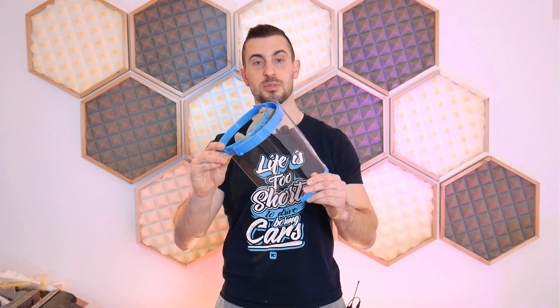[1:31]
Hey guys, so with all the recent world events surrounding the COVID-19 or coronavirus, there's been an incredible amount of support online from the maker community. They've been supplying the medical field with things like 3D printed ventilators as well as these 3D printed face shields.
Now this one here is derived from a very popular design that I believe originated with Josef Prusa. And I downloaded and printed that original one. I tried it on and I noticed that there were some areas that I thought I could improve, namely the biggest one being the requirement for an elastic band around the back.
That elastic band can be hard to source, and a lot of people don't commonly have something like that just sitting around at home. And with all the stores closed, it's also very difficult to get your hands on other stuff. And so what I wanted to do was work in a design in the back here that could allow you to still provide tension around your head while you wear this mask, and it's all printed in one piece. So I'm gonna show you guys that in this video.
As well, I wanna just offer you guys a little bit of advice in terms of ideas for things like the foam piece on the front, as well as alternatives to that elastic band in the back that you can also use with my design here.
Now, as a foreword to the rest of this video, you'll notice that I'm handling this thing without gloves. I am aware that I can have potentially contaminated this particular mask, and the good thing is that I understand that, and this mask is not meant for distribution. This one here is for prototyping and demonstration purposes only, so you guys don't need to remind me of that in the comment section. I will not be distributing this mask.
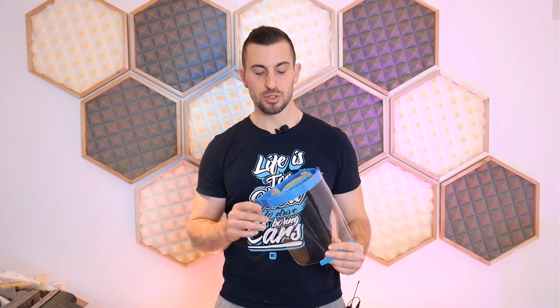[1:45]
If you guys do plan on distributing masks and making your own, please be mindful of the rules around sanitation and not contaminating the people that you plan on giving these things to. And so there's some procedures I'm sure that you can find online in terms of producing and handling these things. Please do not infect other people by handing these things to them after you've touched them with your bare hands or you breathe all over them.
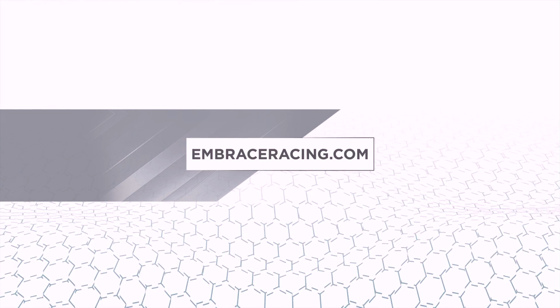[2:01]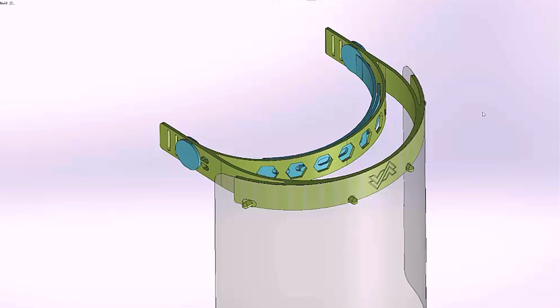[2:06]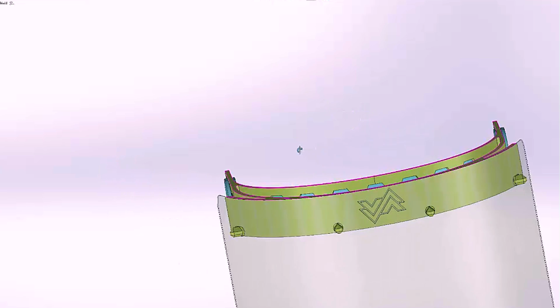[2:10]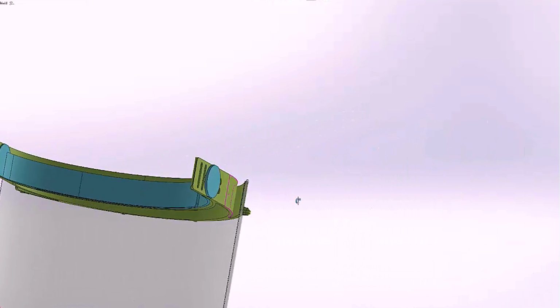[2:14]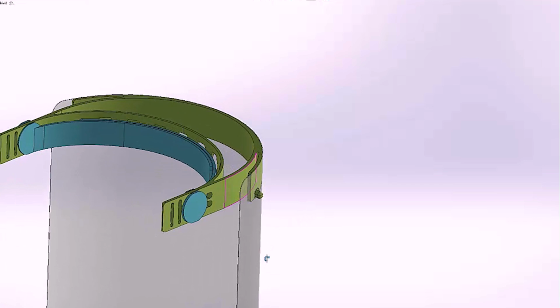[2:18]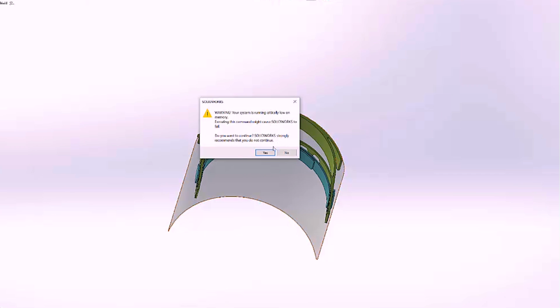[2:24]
So we'll start off by taking a quick look at the CAD model just to give you a general idea of what this thing looks like. And so I've modeled this in SolidWorks, and as we rotate towards the back, you can see the additional blue straps that I've modeled in. And these things here are modeled in the position and orientation that you would print this entire thing.
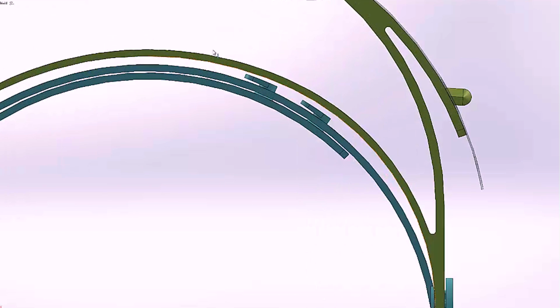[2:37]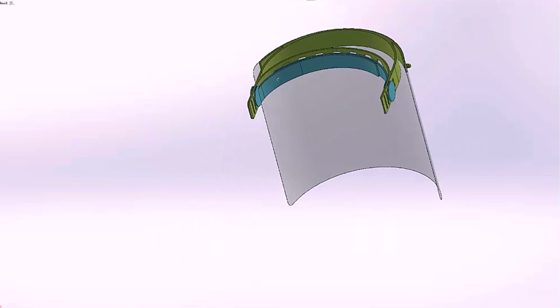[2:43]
Looking at a top view, this is what it would look like as you print it from the top on a 3D printer bed. And again, you can see the sort of tighter tolerances between those pieces. And this is a single piece print-in-place model, so you don't have to do any sort of additional post assembly.
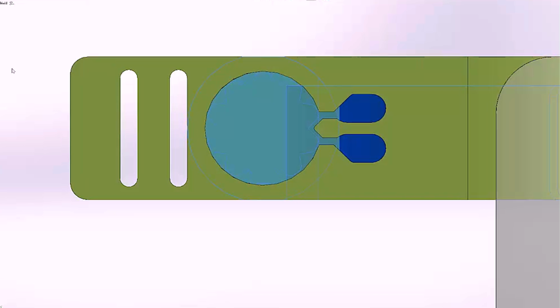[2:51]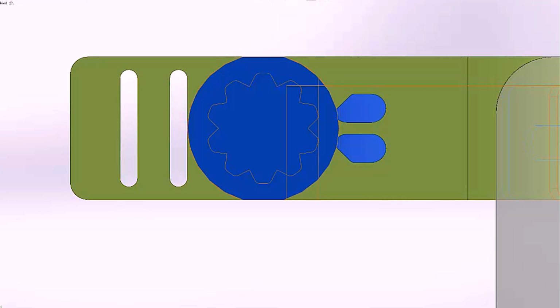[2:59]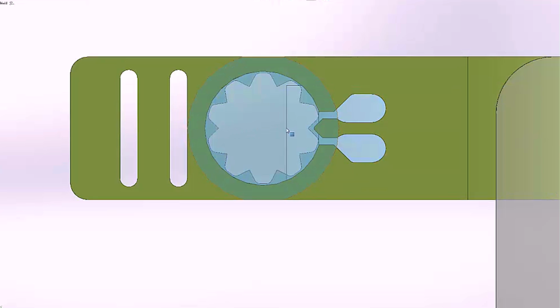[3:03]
So now looking at a side view, you can see here that I removed those headband straps, and there's a little arrow shaped detent feature in there. And as I bring the straps back and I make them transparent, you'll be able to see an outline of a sort of gear shaped looking mechanism, and that little arrow detents into those features there.
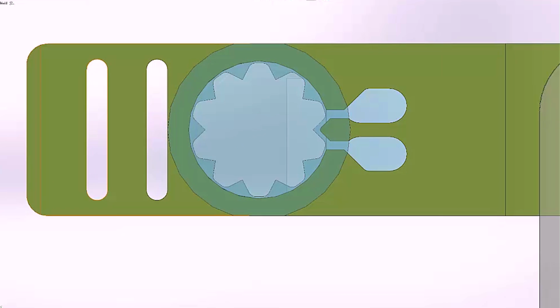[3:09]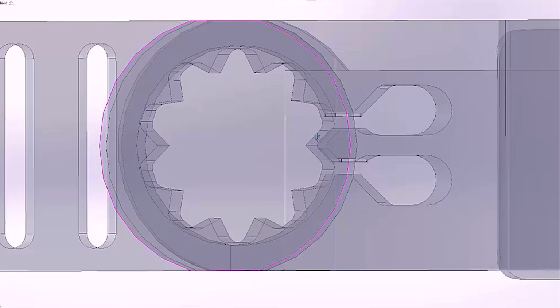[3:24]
And so as you move the straps up and down, whether it's above or behind your head, there's a bunch of discrete positions that they fall into, and it keeps them secured in place. And then that little arrow shaped piece has some material above and below it to keep the thin feature there from snapping off as you continue to cycle through each position.
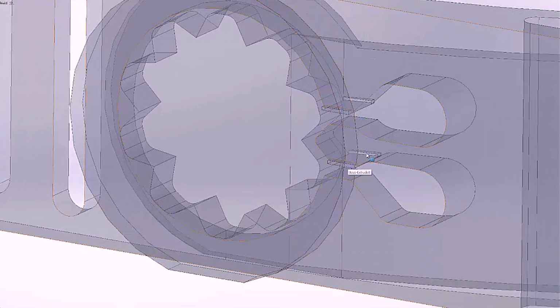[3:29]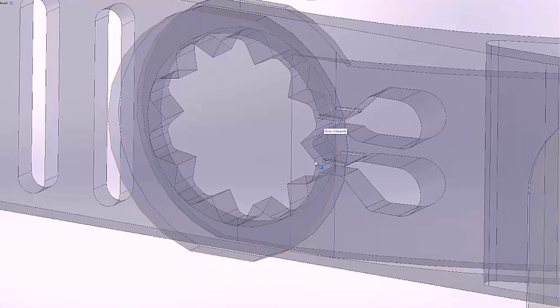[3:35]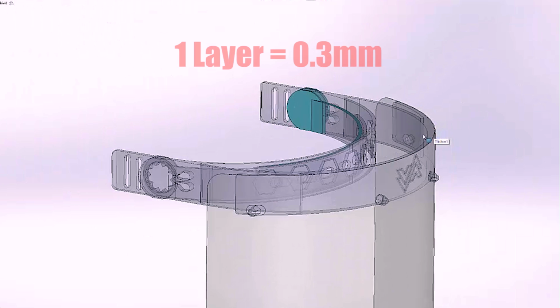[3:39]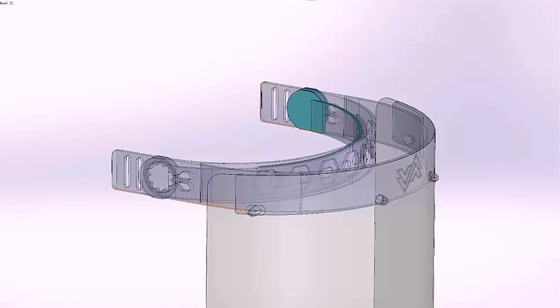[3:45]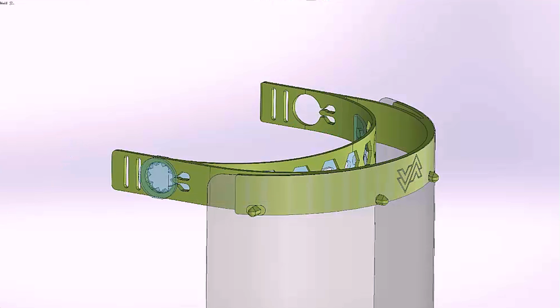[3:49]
Now, as I bring in these other small features, I've employed some small 3D printing tricks here. And what I've done is I've created little bridges on the overhang parts that are only one layer thick. And so when I bring them back into the model, because now I've connected all of the pieces, it's essentially one giant piece instead of three individual pieces. And so you see the colors change there in SolidWorks.
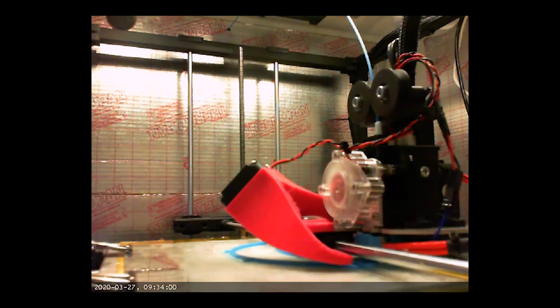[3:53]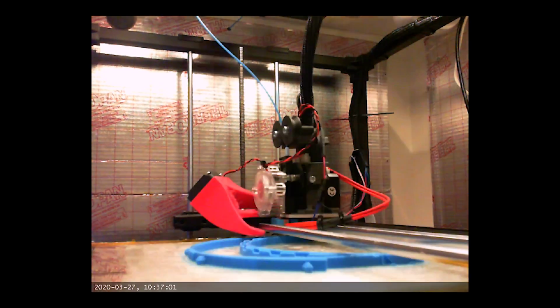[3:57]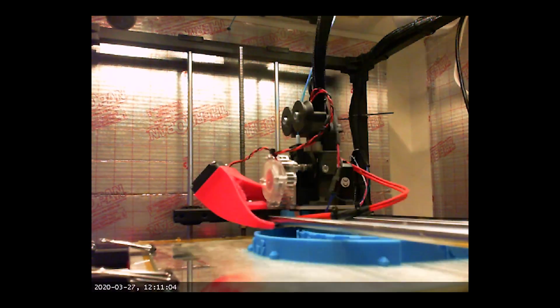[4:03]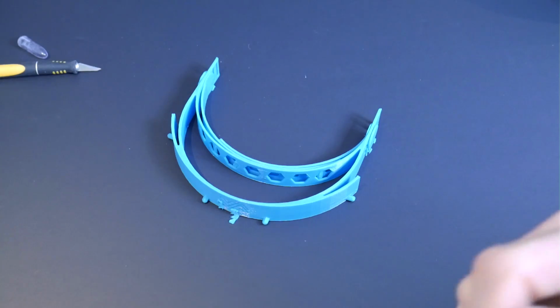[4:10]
But essentially those little single layer bridges allow you to print those complete overhangs without any sort of support. So you won't need any support inside of that model there, and that'll make a nice clean print. And then afterwards you can just break those single layers free very easily by hand. Post-printing, there is very little cleanup to be done.
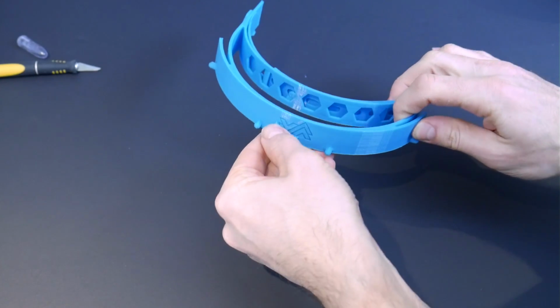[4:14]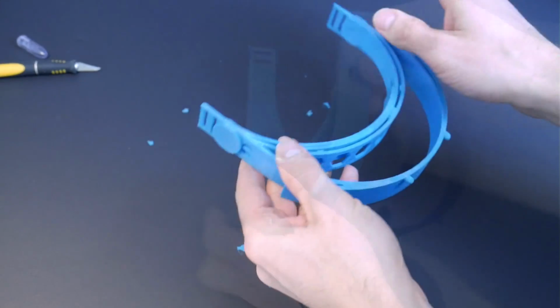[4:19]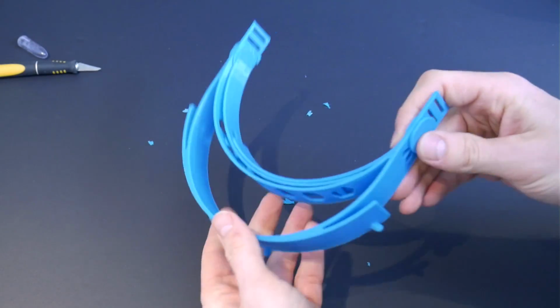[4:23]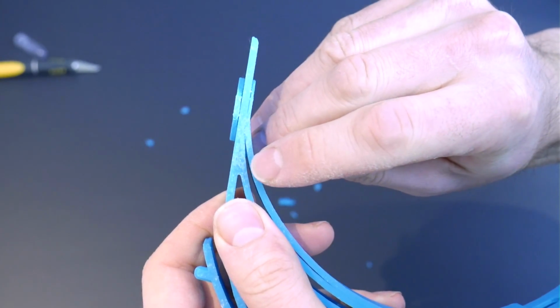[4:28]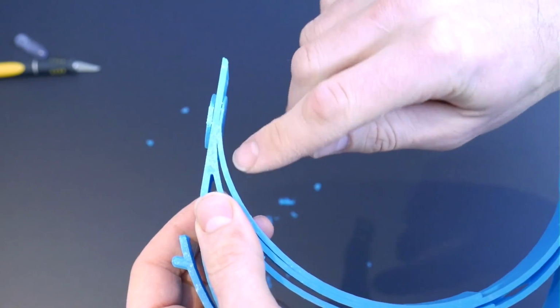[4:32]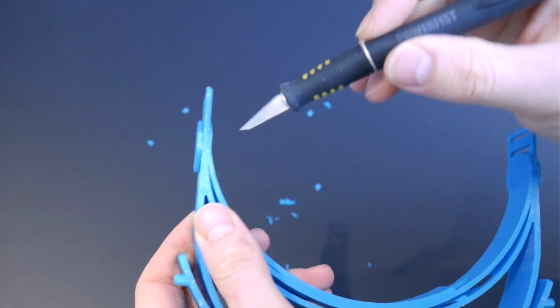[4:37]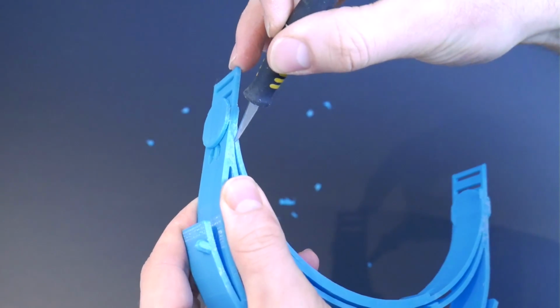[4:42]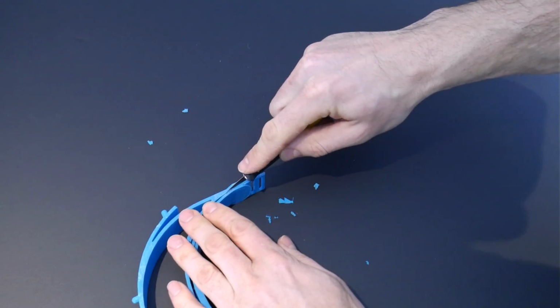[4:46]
You can actually pick off most of the support, if not all of it, by hand, as you see I'm doing here. Now, depending on your printer tolerances, my printer isn't the greatest, and on the bottom layer, it has a tendency to sort of really squish everything together and over-extrude just a little bit. And so it melded those bottom layers of the separate parts together. So my headband is actually still a little bit attached to the main bracket, if you want to call it that. I'm gonna take a little razor blade here and I'm just gonna separate them, as it's only the bottom layer that's really an issue. This is pretty easily done.
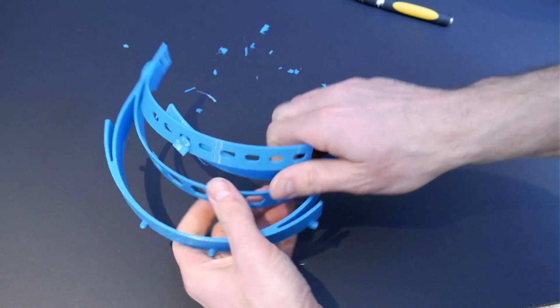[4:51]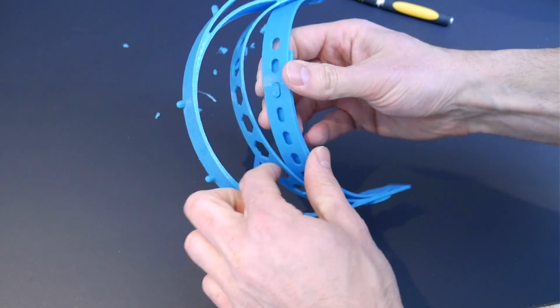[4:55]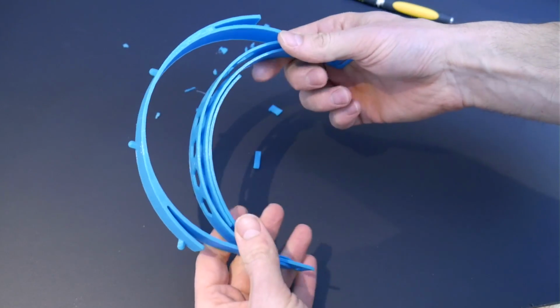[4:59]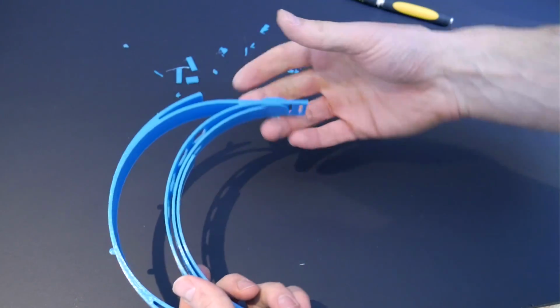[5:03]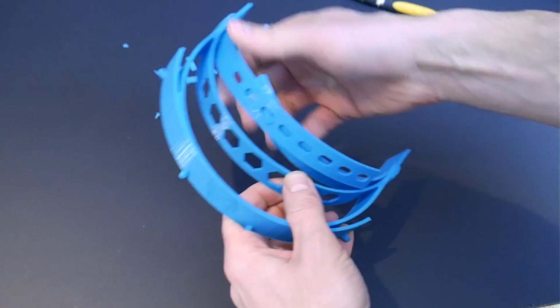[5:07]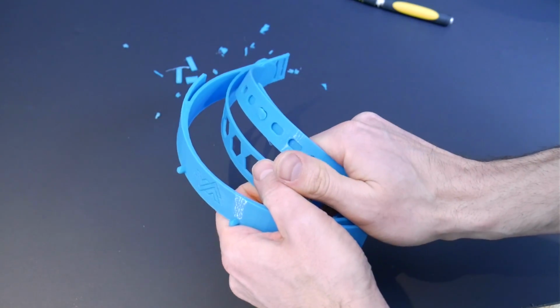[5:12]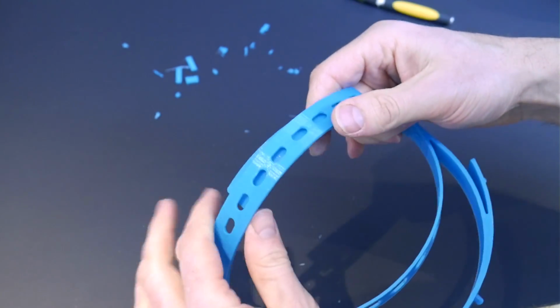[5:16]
So once I've run my blade through, you can pretty much just pull up on those headband pieces and start working them back and forth. You're going to have to just rotate them once or twice in order to break those little bridge pieces that I showed you in the CAD model earlier. And once those things break free, you'll notice that it's much easier to rotate those headband pieces. And you'll also notice, like I said, there's a detent feature in there holding them in place into each position.
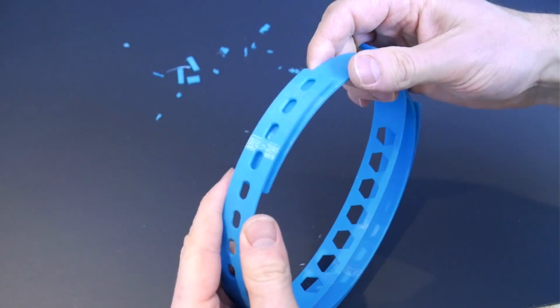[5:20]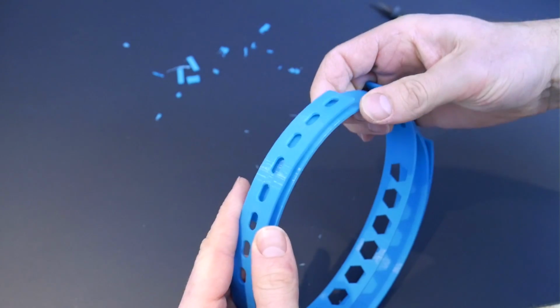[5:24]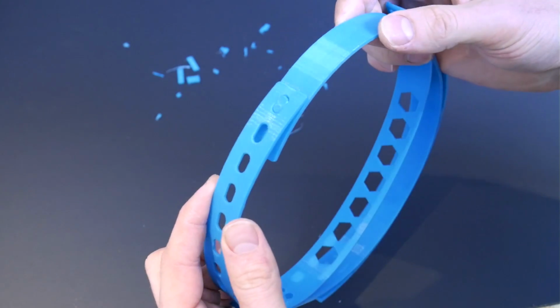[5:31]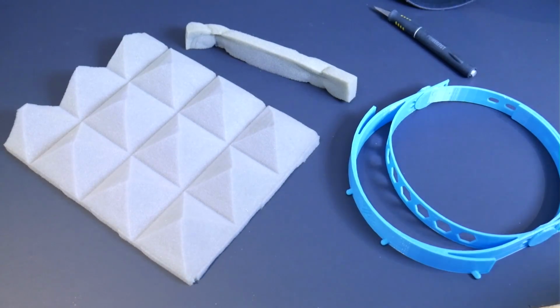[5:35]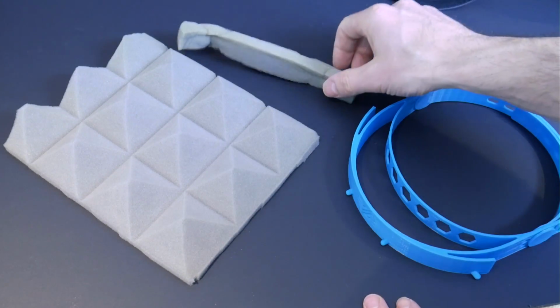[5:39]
With the bands free, you can now insert and secure the headband clasp. And if you notice here, there's actually only one clasp in this earlier prototype, but in the final CAD model, which I've released, there's two clasps for a more secure connection. The foam forehead piece is definitely a requirement, as the bare 3D printed plastic feels like daggers on your forehead.
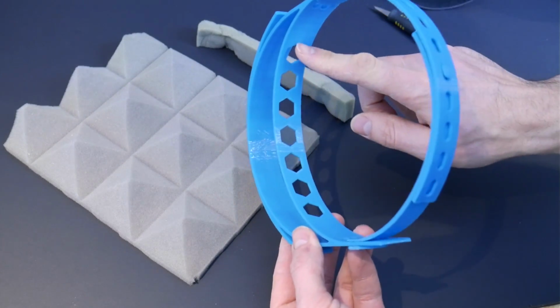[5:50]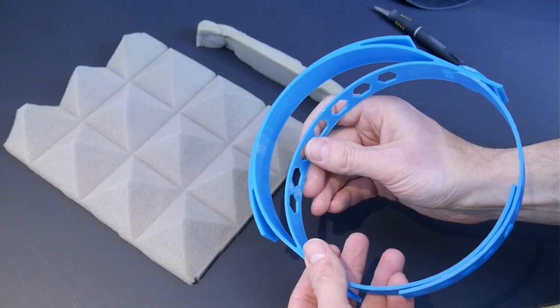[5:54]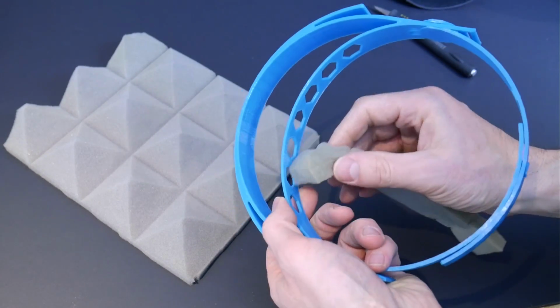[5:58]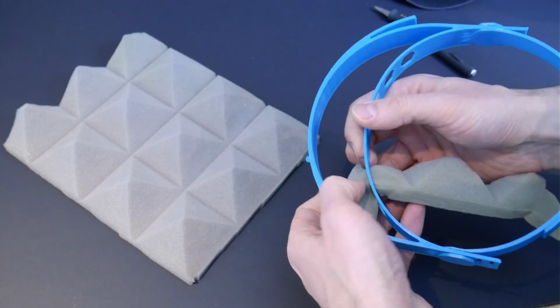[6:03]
And so I'm just cutting up some acoustic panel here that I had from another project. And it turns out that the hexagonal shapes inside on the original Prusa design can be used to weave that foam through, and you don't need to use anything like elastic bands or even an adhesive backing to attach that, because most of us don't have adhesive backing laying around, and most of us probably don't even have this sound deadening material laying around either.
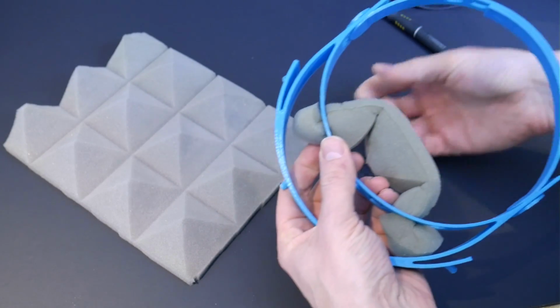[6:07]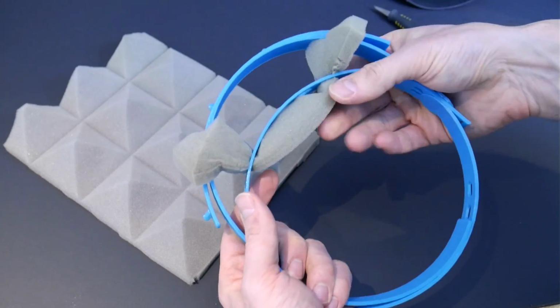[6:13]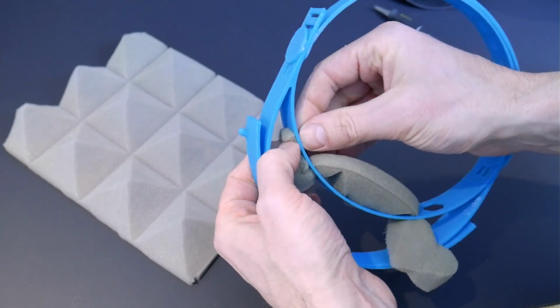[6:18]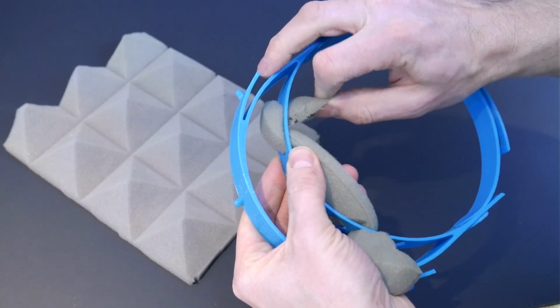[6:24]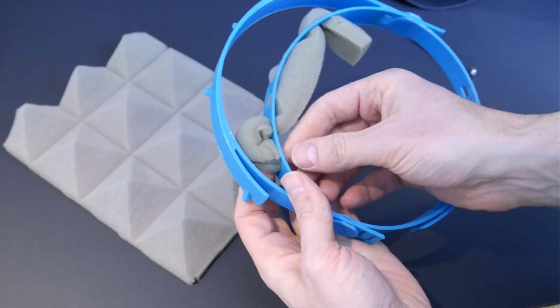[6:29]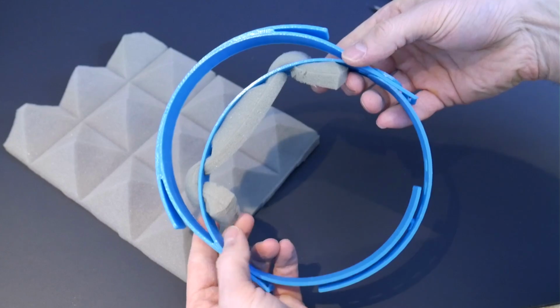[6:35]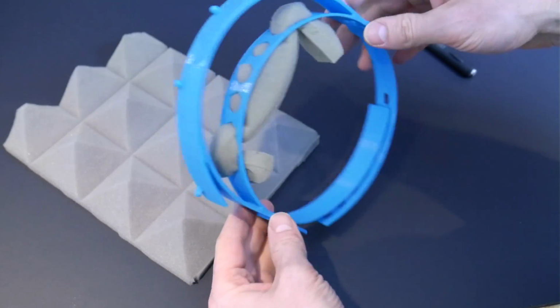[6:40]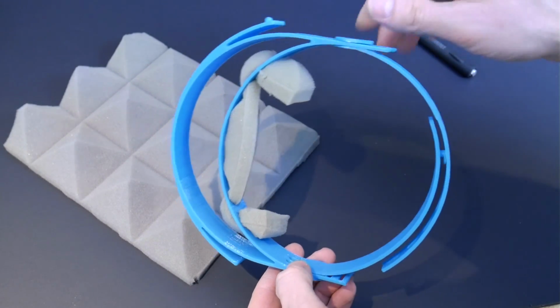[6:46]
And if you guys don't have something like that, I was thinking that you could probably get creative and roll up some paper towels and weave that through, or even cut up some old t-shirts or something of that nature, and again, weave it through like I'm showing you here, and that'll secure it into place. Now, foam or any porous material isn't ideal in a hospital environment, as it can store bacteria, germs, and all sorts of things in those pores. And so by using pieces like this in a resourceful manner, you can easily throw them out after and make it a one-time use feature, where you're not having to clean foam that has an adhesive backing.
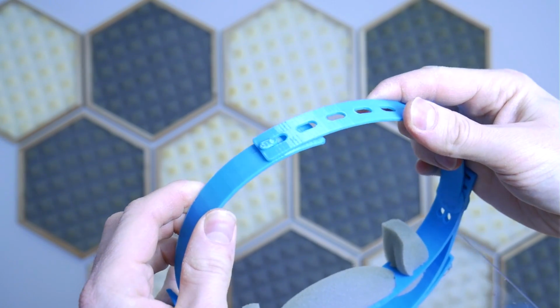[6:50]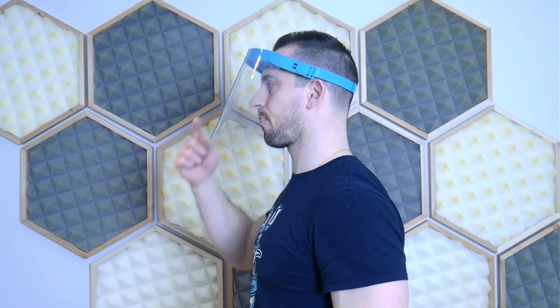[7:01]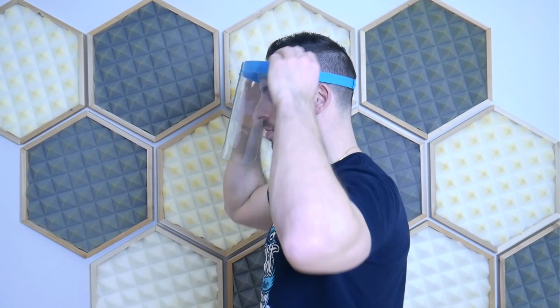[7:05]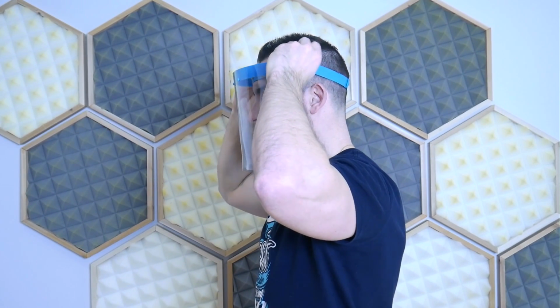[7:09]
We're going to try this thing on, and you can insert the clasp on the new design. Like I said, there's two clasps, and you can essentially just fit it over your head at this point, and you can make any adjustments that are necessary with the clasps. Now, when you turn to the side on the original design, when this thing would go straight over your head with a straight elastic band, there's a large opening at the bottom and the angle is a little weird. By having these detent features, you can actually turn the band down, as I've done here, and get a better angle on that mask, and it's very secure.
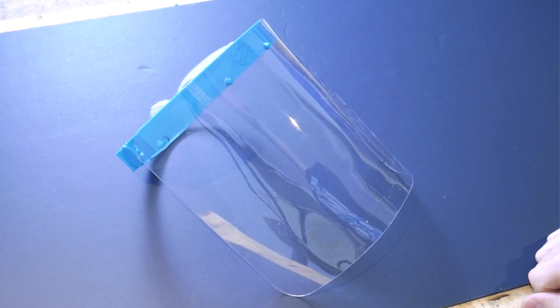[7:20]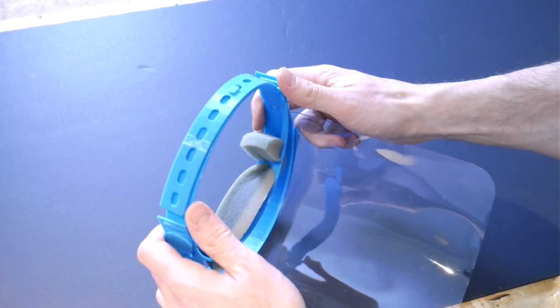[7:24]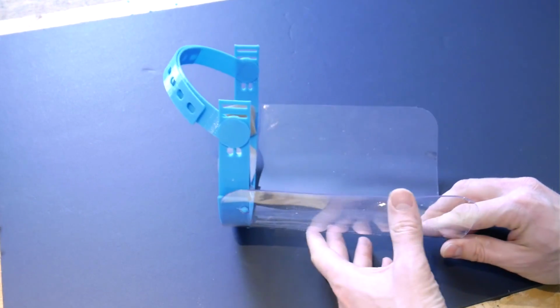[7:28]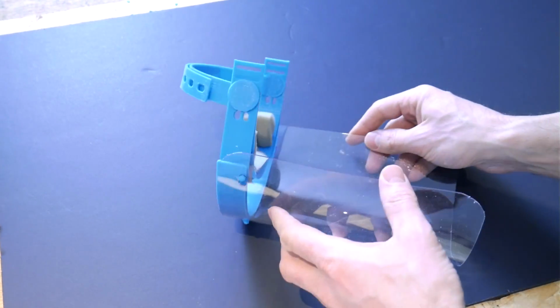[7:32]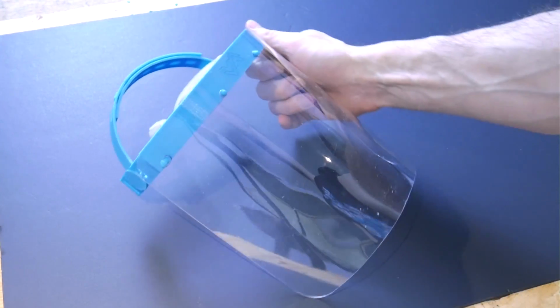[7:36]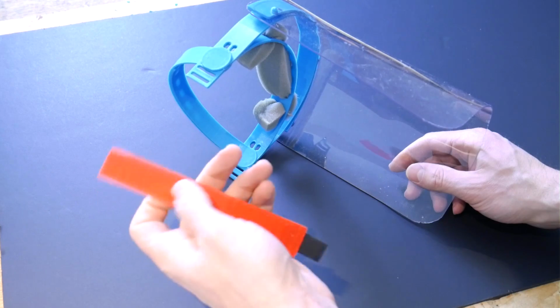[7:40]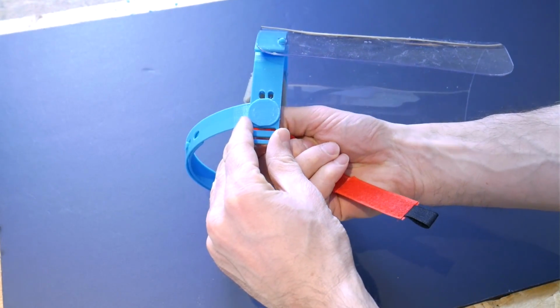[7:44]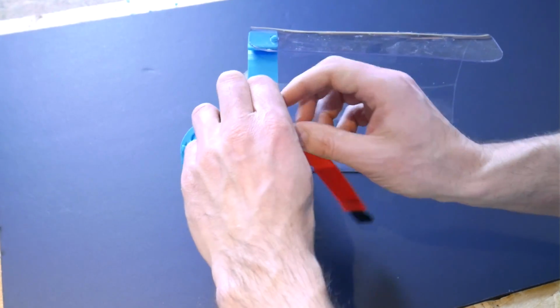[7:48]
Optionally, you can take your bands and you can rotate them upwards into an above the head position, as you can see that I'm doing here. If you're finding that the mask is falling forward over on top of your face too much, that'll prevent it from falling down. Now, you don't have that behind the head support anymore, so there's two slotted features that are included in this model. And you can go back to something more traditional like the elastic features, or get creative and you can go to the dollar store and pick up some Velcro straps.
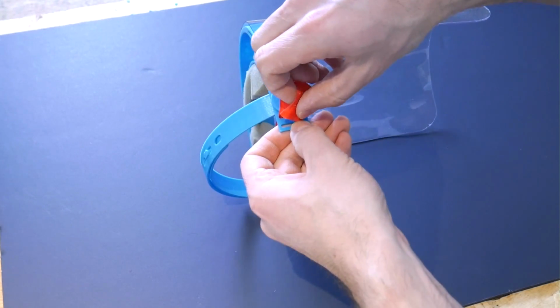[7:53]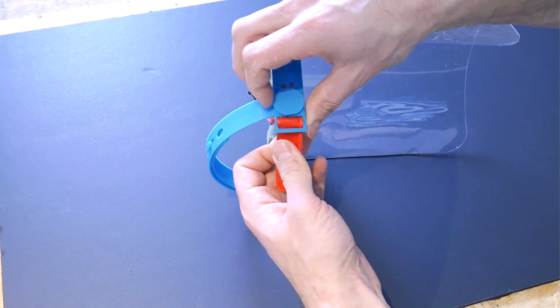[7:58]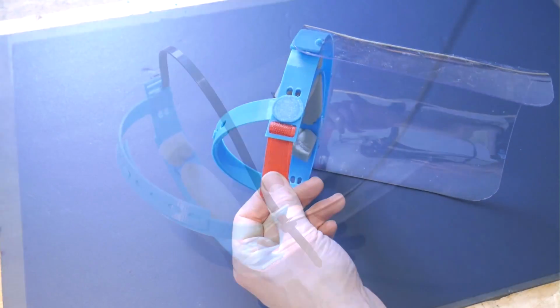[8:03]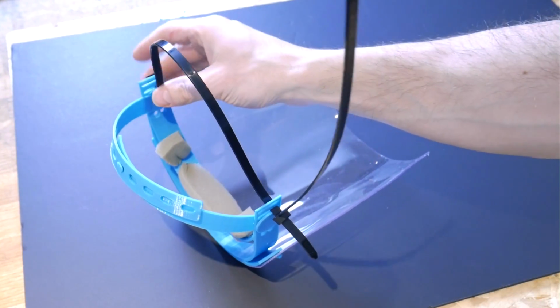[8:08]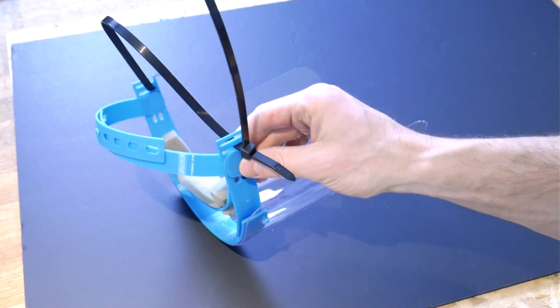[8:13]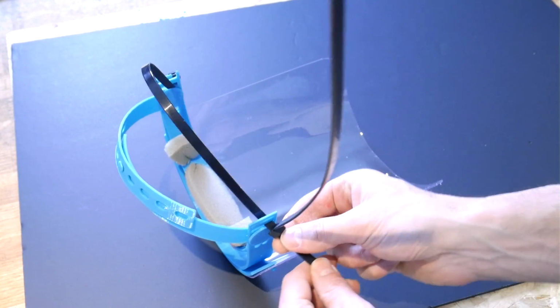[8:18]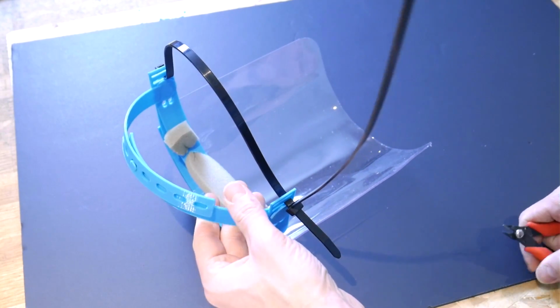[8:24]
The ones that I'm showing you here are just a very short version. I have some longer versions on order from Amazon. And the Velcro can just weave through, and then you can obviously put that behind your head and adjust the tension with Velcro. If you get really desperate, you can also resort to using zip ties through those little slotted features. And here you can see that I've looped it through those slots at the back, and you're just going to need a second zip tie to lock it into place, and then you can adjust the tension on your head, and then you can come in with some side cutters and obviously cut off the excess zip tie.
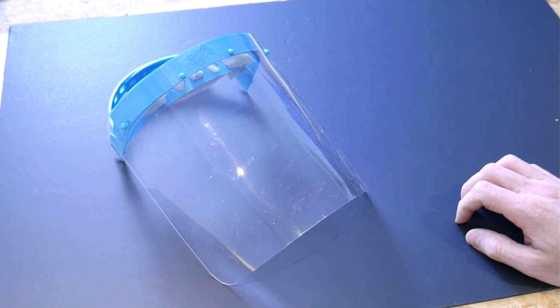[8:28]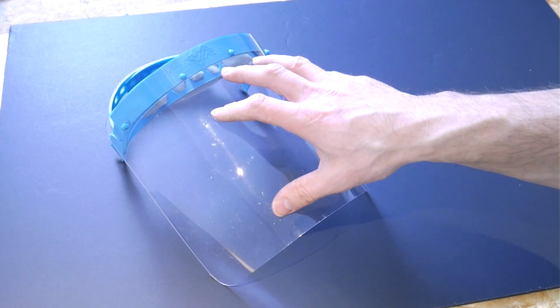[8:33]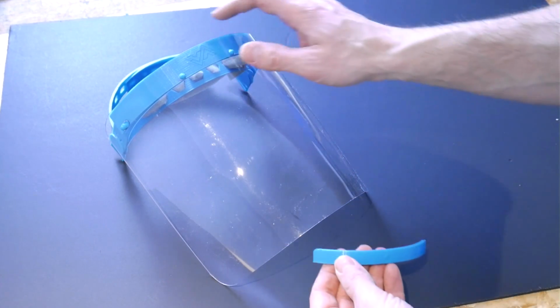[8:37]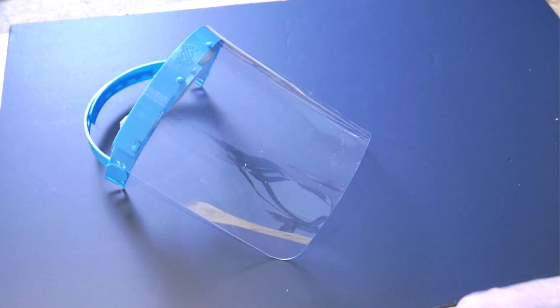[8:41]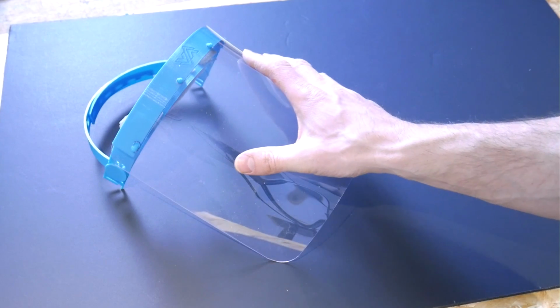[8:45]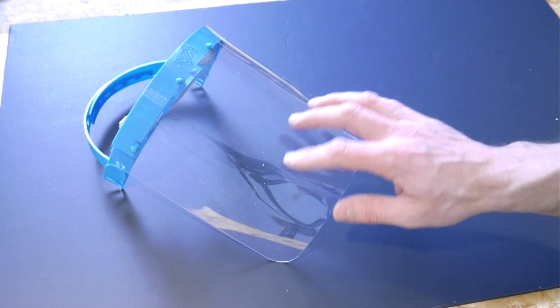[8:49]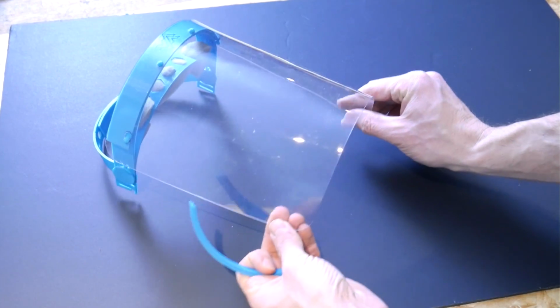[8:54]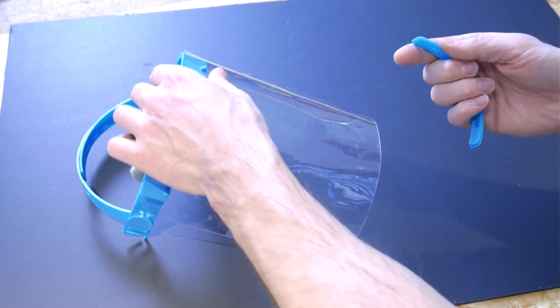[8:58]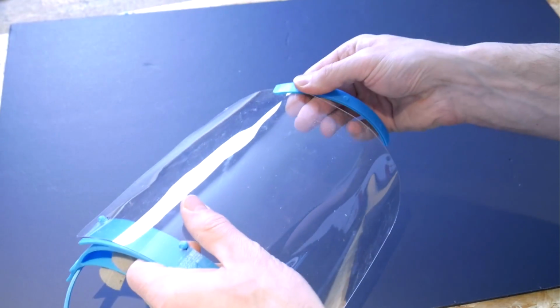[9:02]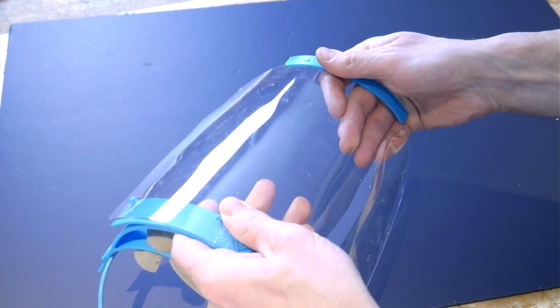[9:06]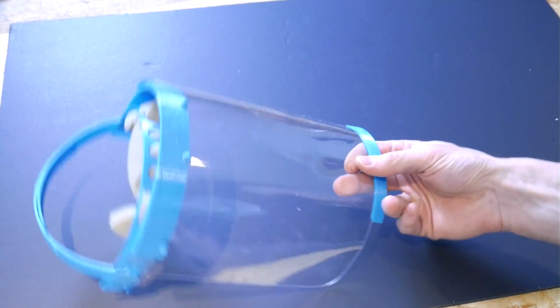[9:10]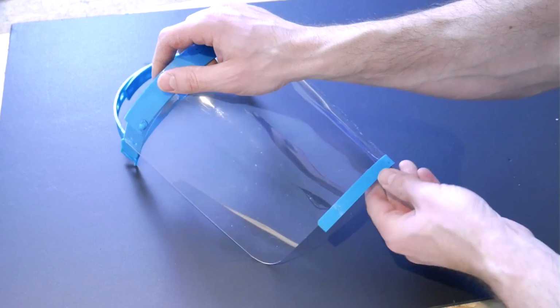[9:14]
As for the actual plastic shield, the original Prusa design calls for a 0.5 millimeter thick, 8.5 inch by 11 inch, which is an A4 size sheet of regular printer paper, PETG plastic. Now, I had PETG plastic sheet here, but it's 1.5 millimeters thick, and so I did get it to fit on there as a prototype just to prove that it did work. I'll include the template for drilling and cutting down below in the description, but other than that, if you have the original 0.5 millimeter thick piece of PETG as it calls for, you can include the bottom piece here. It's 3D printed as well, and that just holds it into shape, as it is a lot more floppy than this 1.5 millimeter thick version that I have here.